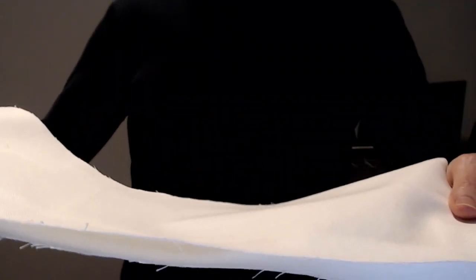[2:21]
Before I explain how to make the mask, I need to give you a little background based on historical evidence. As I explained in my prior video, cotton gauze masks helped end the 1918 influenza epidemic, also known as the Spanish flu. And the most telling evidence of their effectiveness was perhaps in San Francisco, where everyone was told to wear a mask made from at least 4 layers of fine gauze. And wearing these masks ended the epidemic quickly there.
One important characteristic of fabric is the number of threads per inch, how dense or tightly woven it is, and this is known as the thread count. In fact, there was a study published in 1918 on the effectiveness of gauze masks to stop droplets expelled by coughs. And the study concluded that you need at least 5 layers of gauze if you're using gauze with 32 by 26 threads per square inch.
Over the years, more studies were conducted on the effectiveness of gauze masks, which were used often in hospitals. And a study in 1949 on protecting nurses from airborne tuberculosis recommended gauze of greater density, around 42 by 42 threads per square inch. And you can find this type of gauze for sale today as cheesecloth. The thread count for cheesecloth is given by its grade. Grade 90 cheesecloth has 44 by 36 threads per square inch. So it's probably your best option, at least for now.
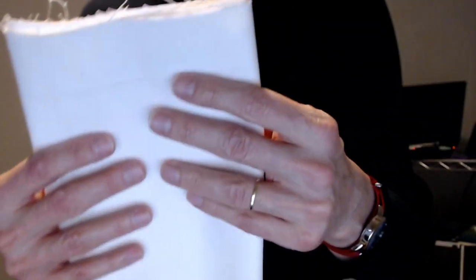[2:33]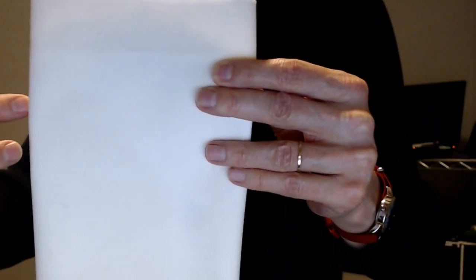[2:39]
Once you obtain the cheesecloth, the procedure is simple. Bulk cheesecloth is sold by the yard. So you cut a piece 1 yard wide, 36 inches, by 9 inches long. Then you fold the piece in half. So now it should be 9 inches by 18 inches. Then you fold it into thirds. So now it should be 9 inches by 6 inches, and the mask has 6 layers. It should be both breathable and protective.
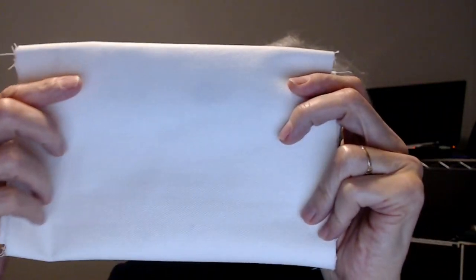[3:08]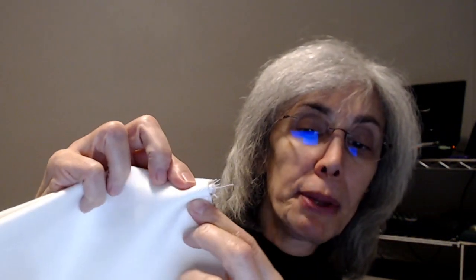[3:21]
Next, you're going to fold the edges over and sew down. Now, you lose a little bit of fabric when you fold over the edges, and when you do that, the whole mask should be about 7 inches by 6 inches. And then you should put 2 pleats on each side. So you pinch a little bit of the cloth and sew a few stitches to create a pleat. Then, using any fabric or even shoelaces, attach 4 straps, 1 to each corner. Sew or use fabric glue. Each strap should be about 14 inches long.
Finally, sew a little bit of black thread to the middle of the mask on one side, or make a dot with a permanent marker. And that is going to be the dirty side, which others might cough into, so that side should always face away from your face. To use the mask, place it against your mouth and nose and tie the top straps behind your head. Then tie the bottom straps above your head, and that will pull the bottom of the mask tight against your chin. When you're done wearing it for the day, untie the straps and clean it, but be careful not to touch the outside of the mask.
To clean it, simply boil it in water for 15 minutes or dip it in rubbing alcohol for a minute and then hang it up to dry overnight. If you can, make extra masks for others who cannot make them. Personally, I think it's fair to charge them for the materials and your time. Good luck.